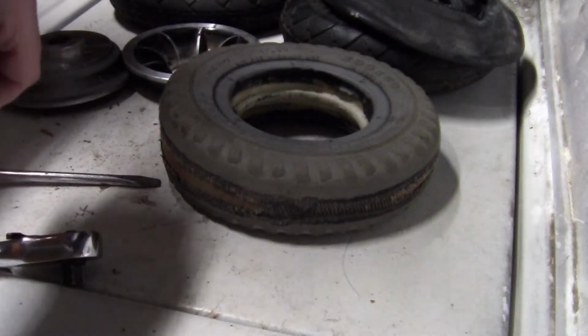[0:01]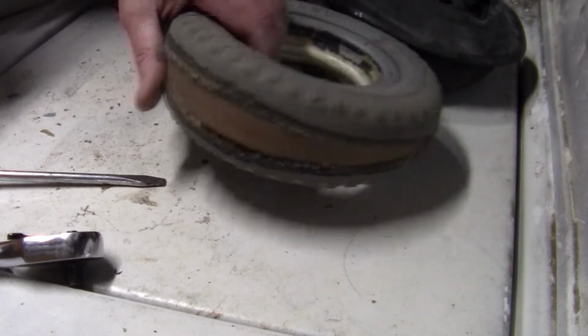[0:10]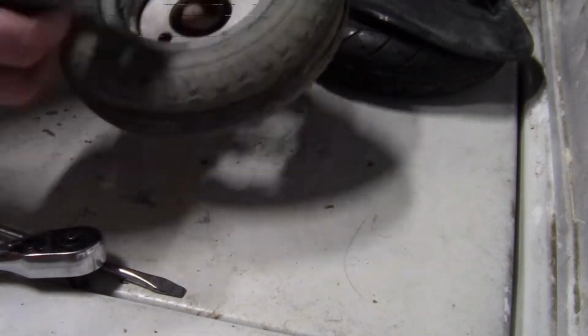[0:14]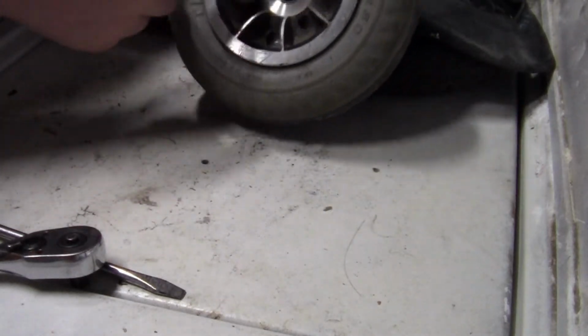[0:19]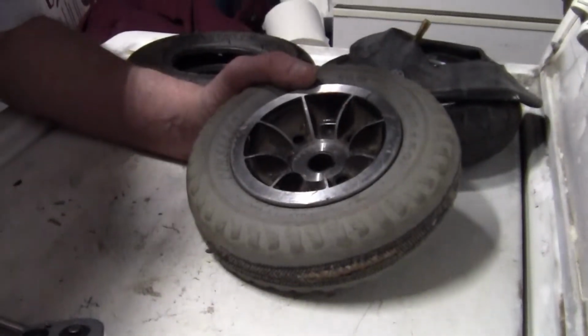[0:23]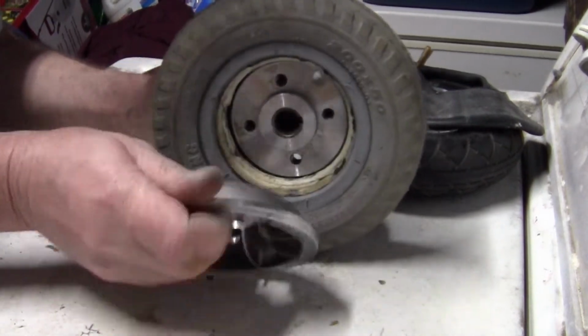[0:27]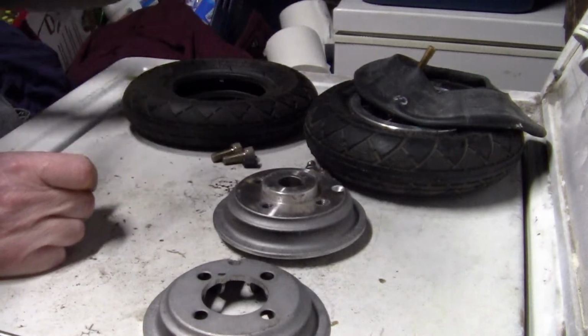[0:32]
Wanted to show you all this, but unfortunately all I did, okay, this is the old tire. It's pretty sketched. That's all I did. So I took the 4 bolts out for the split rim. Let me get you up here maybe. Alright, just took the 4 bolts out and split the rim. That's all I did. Okay? There you go. There's the old tire. You can ditch that. You don't need that no more.
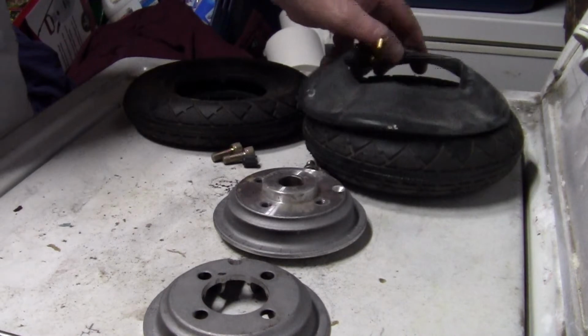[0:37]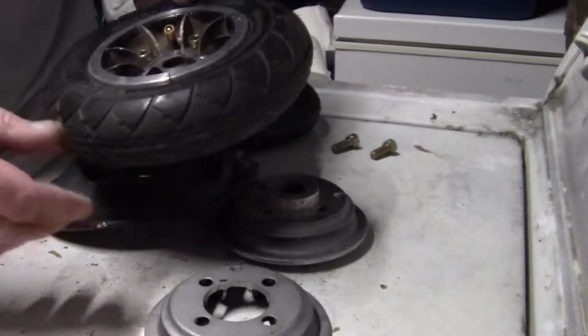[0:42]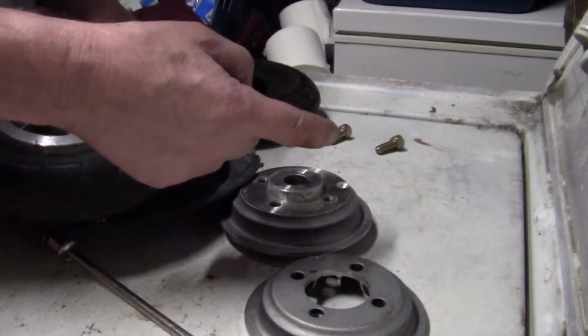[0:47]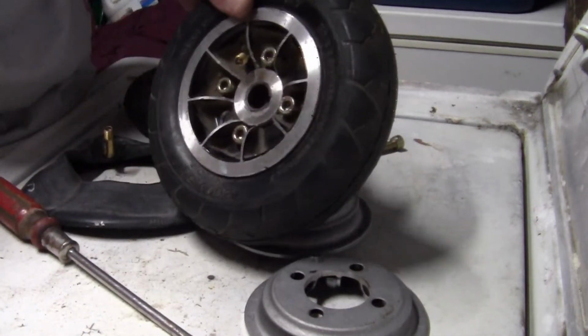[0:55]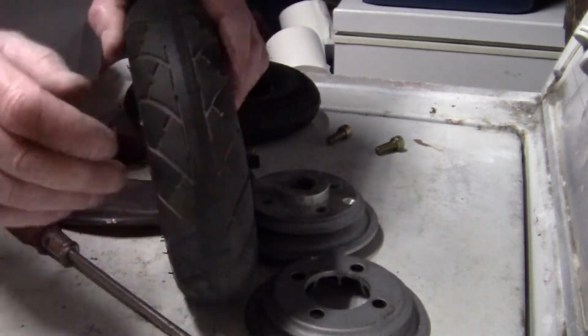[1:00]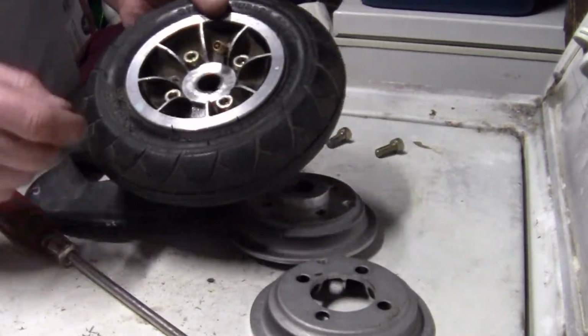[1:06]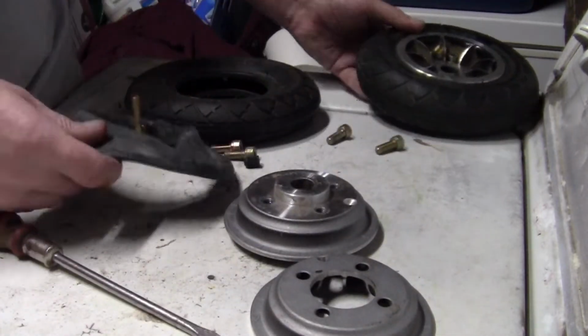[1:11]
Alright. This video is dedicated to doing this. Taking one of these split rims off a mobility scooter that's got a sketchy tire like that, and you go try to find those tires, and they're extremely expensive and there's no need for it. Here's what you can do. The electric and gas scooters, you can buy these tires in different treads and get them on eBay. The tires are like $6 or something, and these are like $3 or $4 the tube. I'll show you how to do it. Stand by.
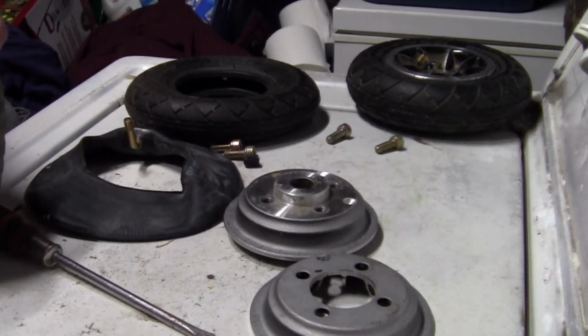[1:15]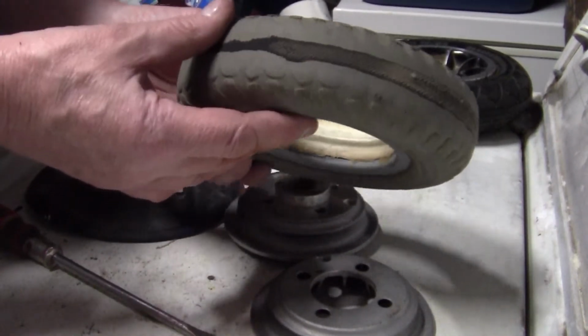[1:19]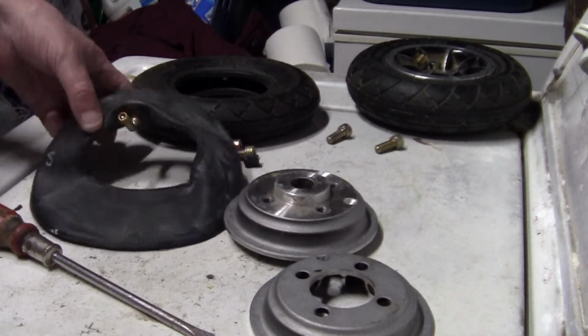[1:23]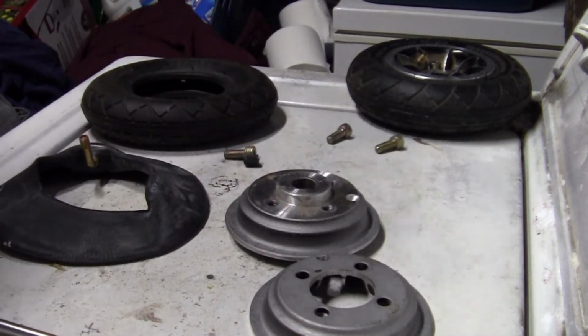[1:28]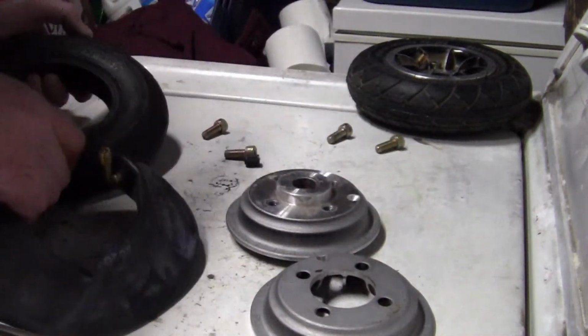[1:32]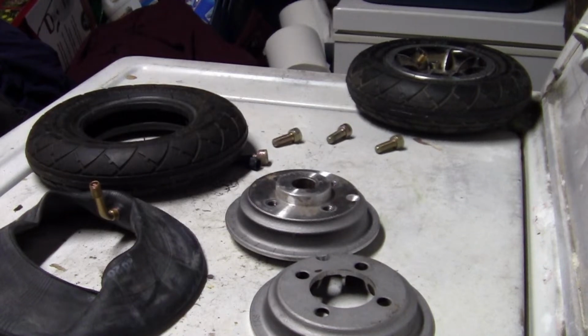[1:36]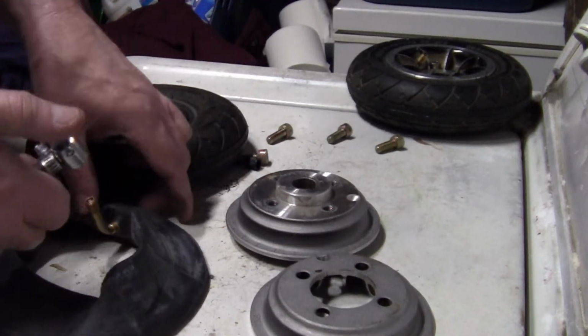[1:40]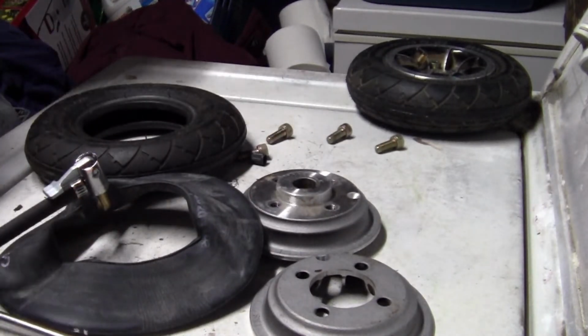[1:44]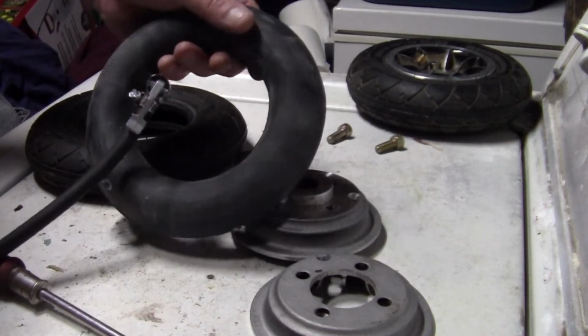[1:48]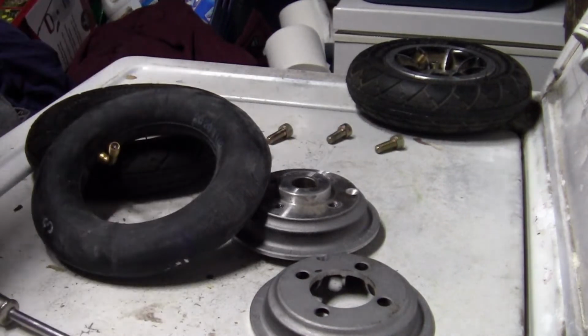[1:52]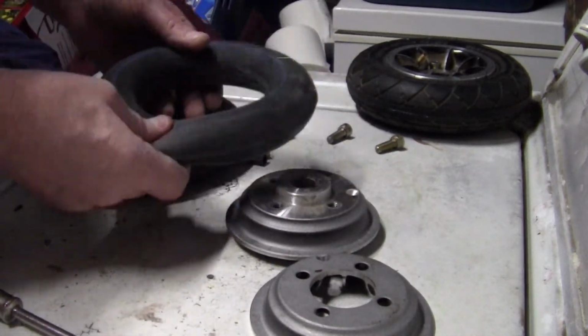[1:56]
Alright, yeah, here's the tire I just changed, and it's sketchy, so don't eat it. Alright, get yourself a tube, get yourself the tire. But you're going to have a hard time getting this tube and this tire in this collapsed state. So you're going to need some way of getting some air in your tire. So, I just have a little portable air tank down here running right now that I fill with my compressor. But you just take a little bit of air and put in that. That's it. Just a tiny, tiny bit. You don't want to blow it way up. It just holds its shape that way. You can still squeeze it.
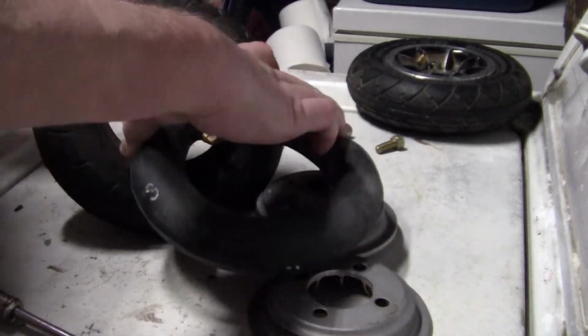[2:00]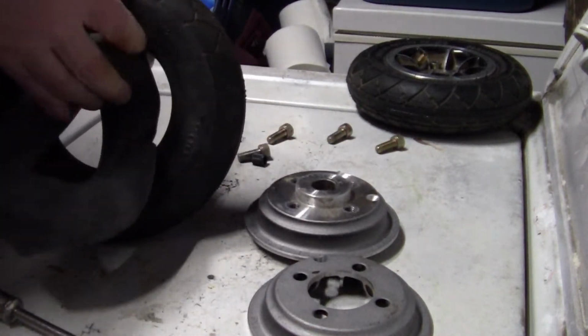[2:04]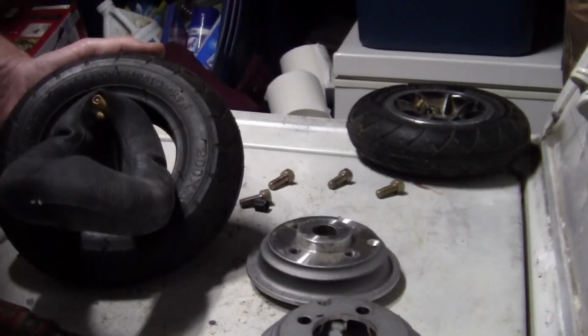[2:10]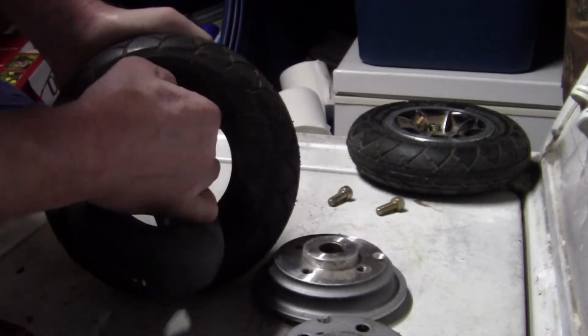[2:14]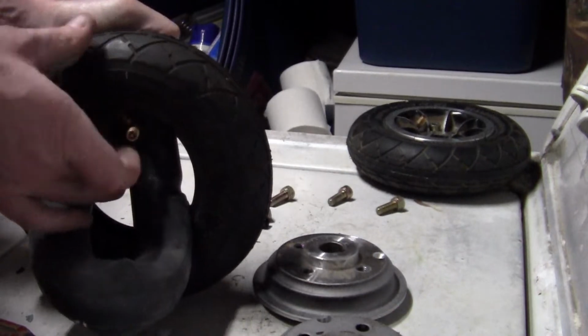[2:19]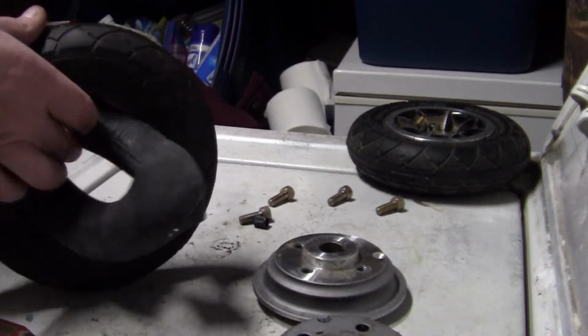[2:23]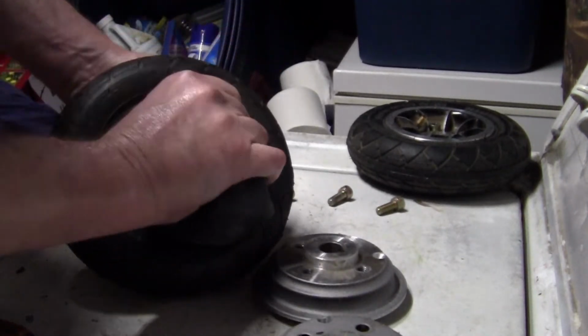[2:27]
Alright. You start by looping your tube like this and spread your tire. Sorry, you can't see a thing. Let me get it up here a bit. Like that. You got to get your tire up in the tube to start it. Push it all the way up to the top. Sort of like a bicycle tire, only way smaller. And you just keep feeding it around till you get your tube all the way in there.
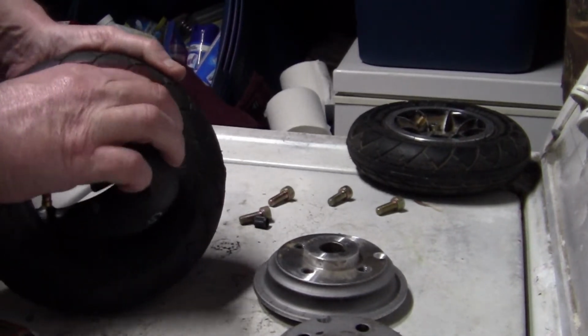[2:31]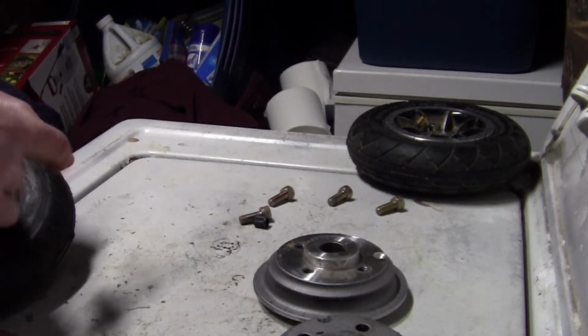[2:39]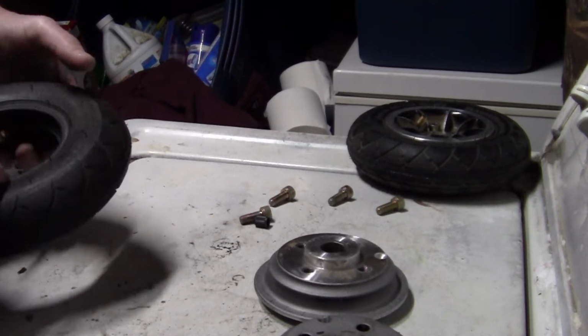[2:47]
Ouch. Still recovering from the junk. Had that COVID all too many times now. 3 is enough. Pray to Lord that I won't get it again.
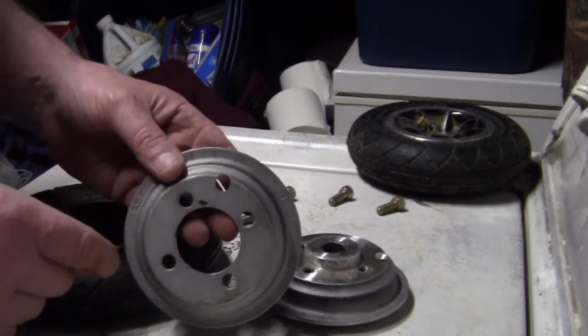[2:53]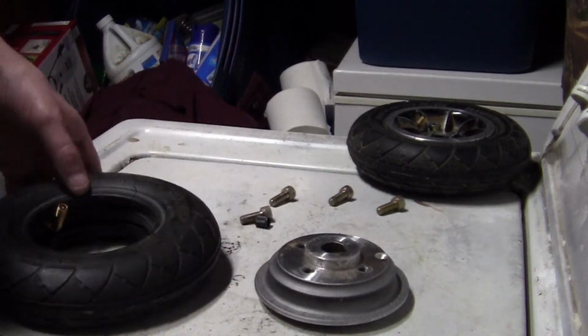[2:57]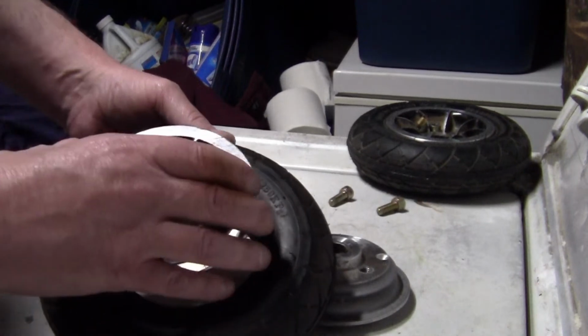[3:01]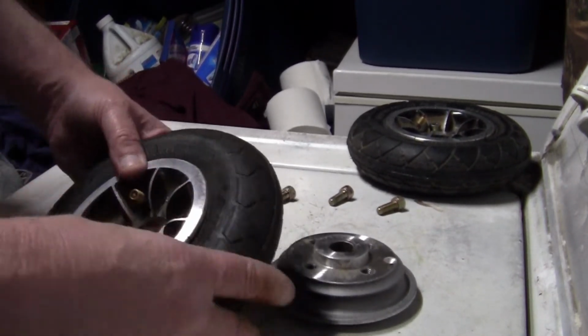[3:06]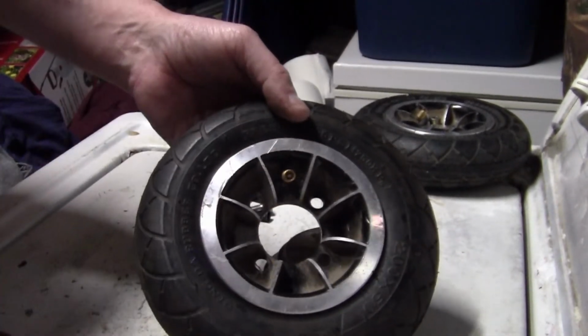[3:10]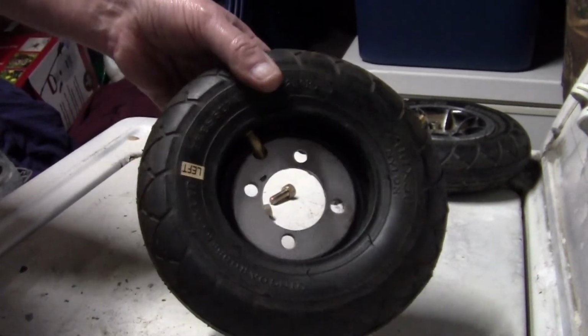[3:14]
Alright, now in this particular case, to make a place for the valve stem, I had to drill a little hole. That may not be your case on yours. You have to check it out. But always get the one with the brass valve stem. Don't get a tube that doesn't have a metal valve stem. You'll wish you hadn't. There. See how it feeds it up right through that hole? Alright. And there's the back side.
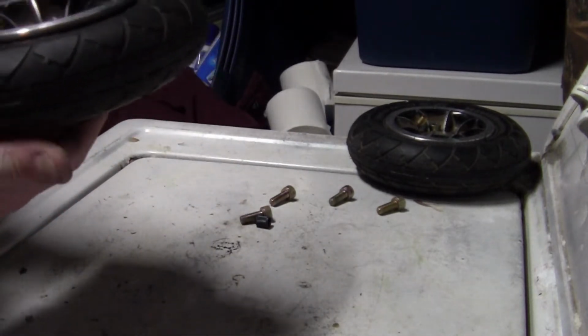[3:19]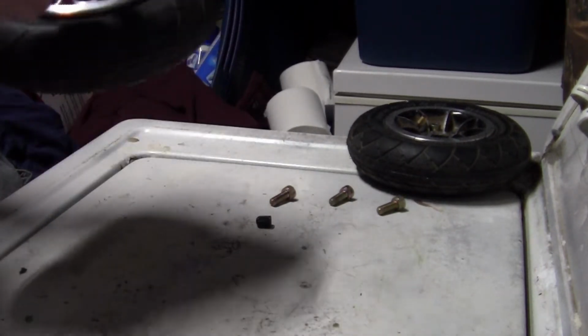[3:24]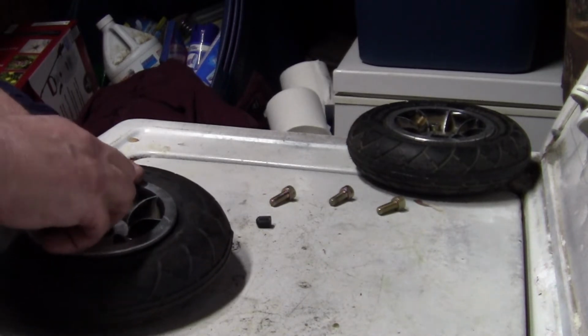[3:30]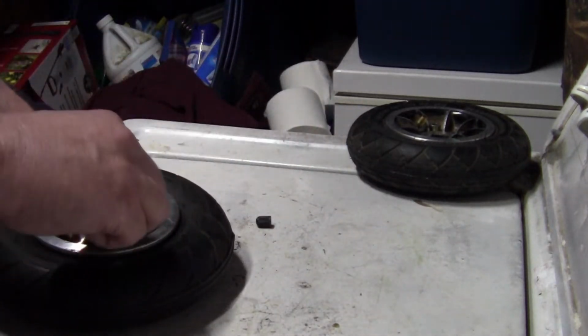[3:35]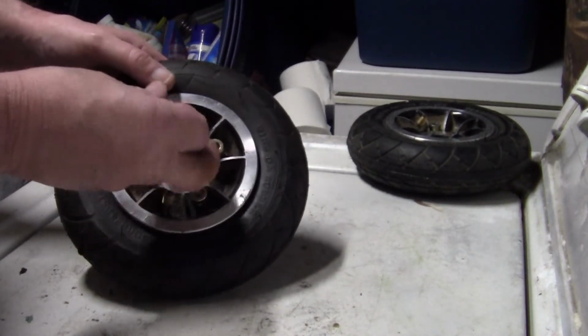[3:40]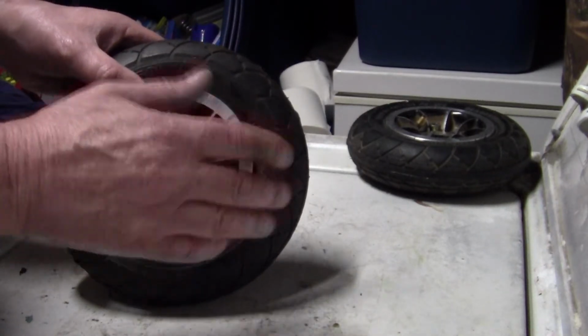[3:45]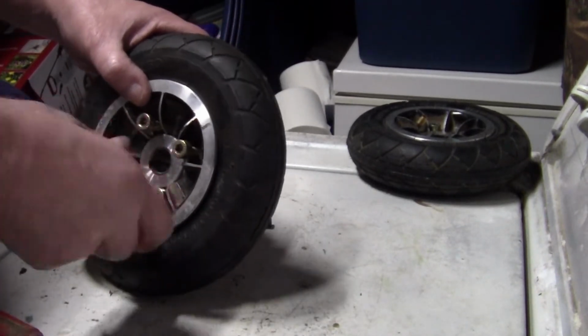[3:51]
Then you take your other half, and you got to line that up now with your bolt holes. And you put your bolts back in. Don't tighten any one bolt. Use a crisscross pattern. Whether you have 4 or 6 or however many. Just put your bolts back in. Because what it's doing is clamping them 2 halves of the wheels together, and you don't want to get one of them cockeyed. You just feed these bolts in.
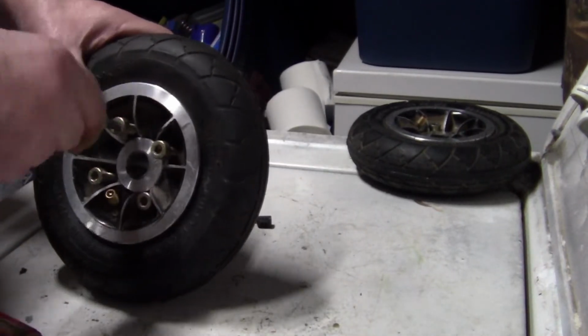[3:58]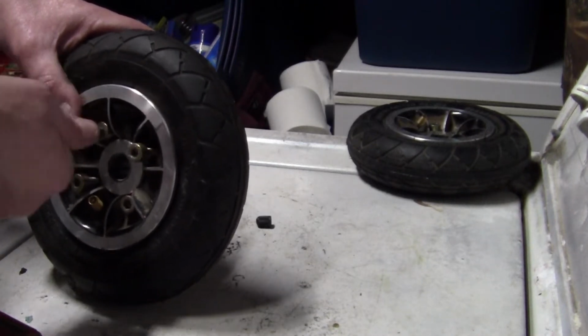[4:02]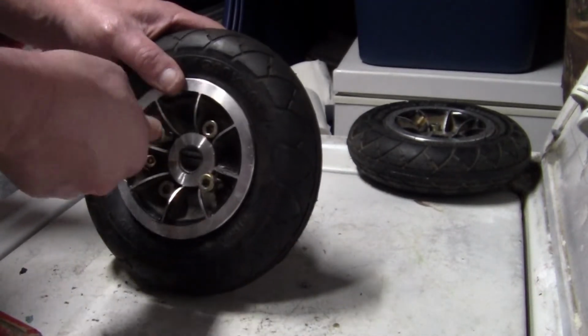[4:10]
I always take the extension in my hand and do this part. You could run them in with an electric or something, but you got to be careful not to tighten one more than the other. Just run them in by hand, and then you kind of know. And then the same thing when you run your ratchet.
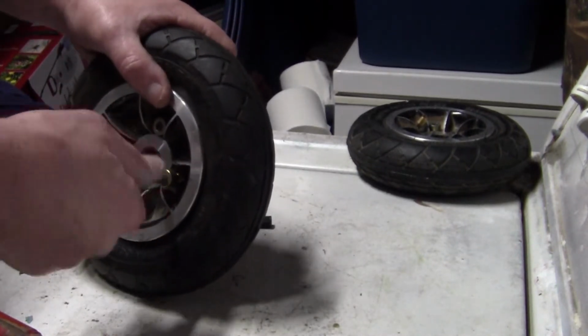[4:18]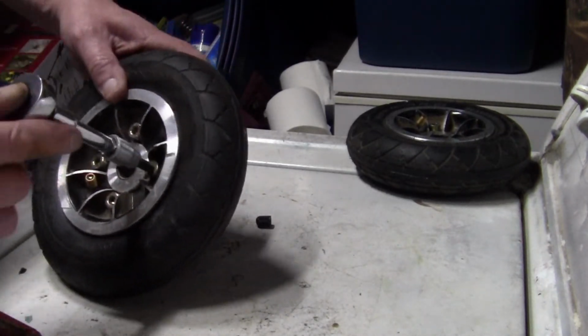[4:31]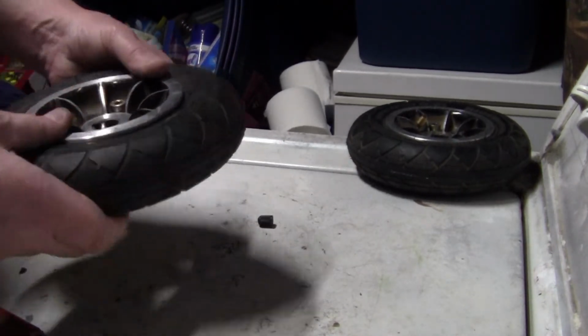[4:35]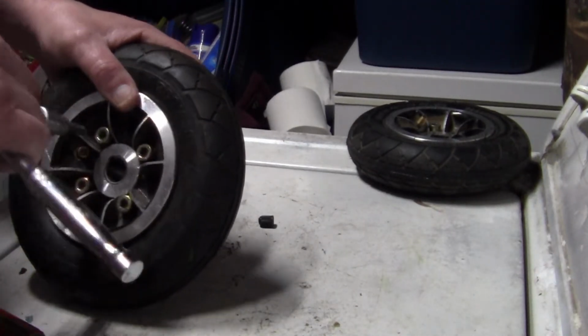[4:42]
You want to. I started to get the electric one, but I couldn't find the 3/8 to 1/4 inch adapter, so the wife's picking one up at work. She works at Tractor Supply as a manager. She's gonna bring me one, and then we can do this type of thing a little easier. That's okay, we can run hand tools, I don't mind. Okay.
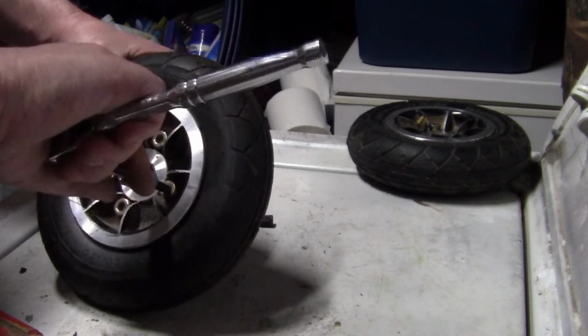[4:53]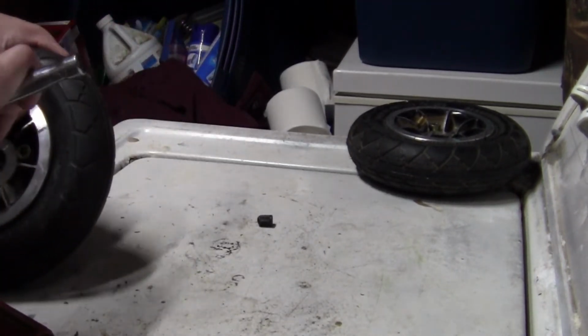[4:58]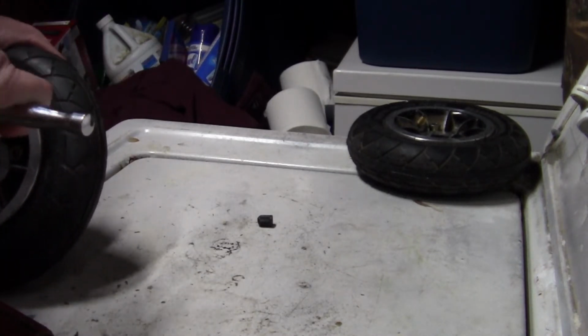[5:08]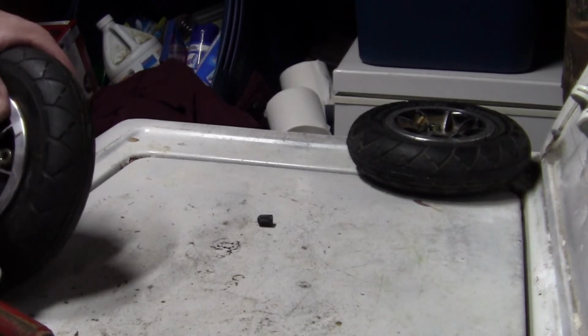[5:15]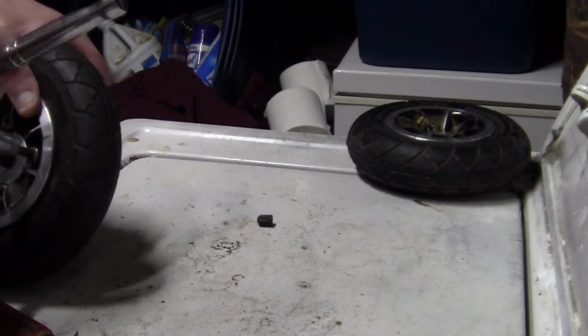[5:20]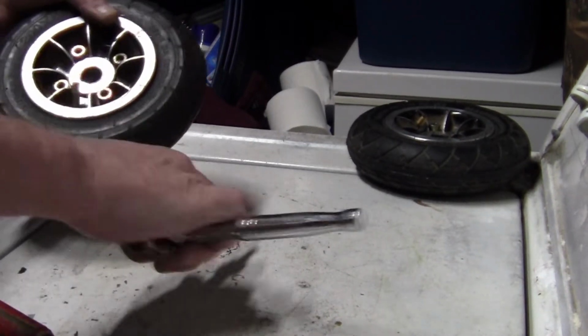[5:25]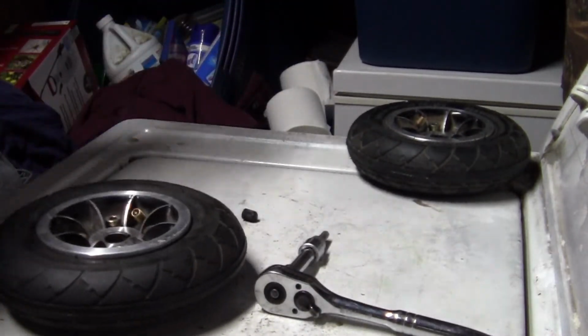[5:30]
Let's get these tight. I had one of these shed a few bolts. Didn't fall apart, but I could feel it getting a little wobbly, so I stopped, came on home. Alright, and there you go. Now all you gotta do is air it up. We'll do that right now.
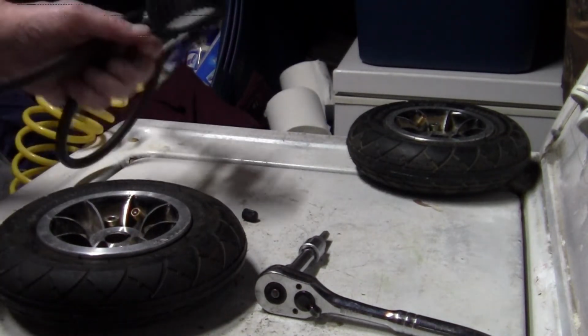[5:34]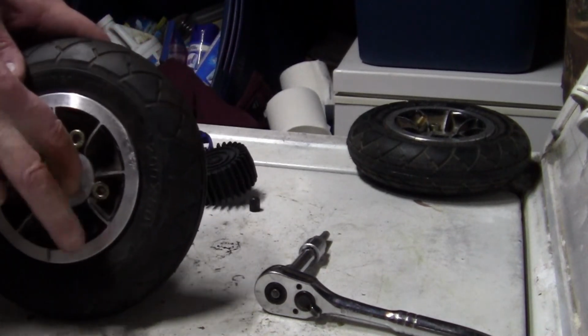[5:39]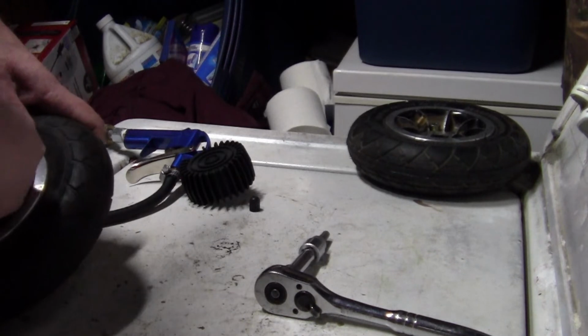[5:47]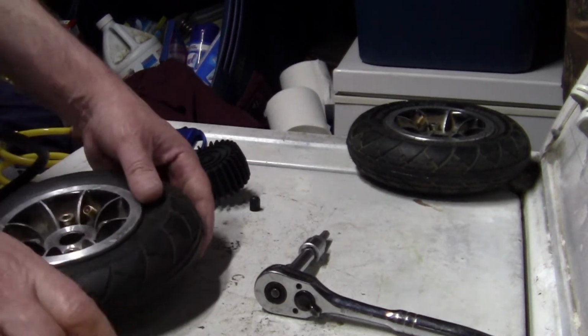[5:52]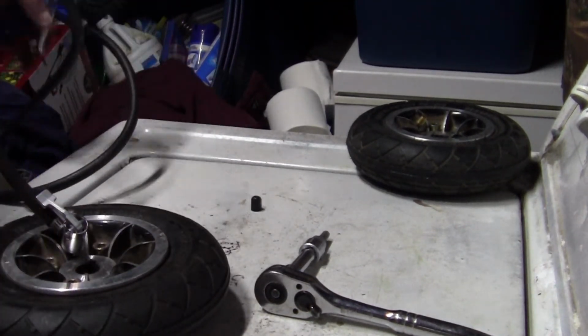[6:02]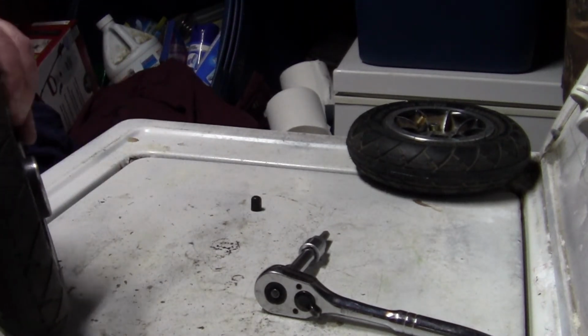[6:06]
And it's not like you're gonna be running your mobility scooter out in the brush, okay? So it's perfectly fine to put air up tires on it. And you'll save hundreds of dollars, literally. Shoot, missed that one. Get over there. There we go. Now we can air it up. Air it up slow because these don't hold much air.
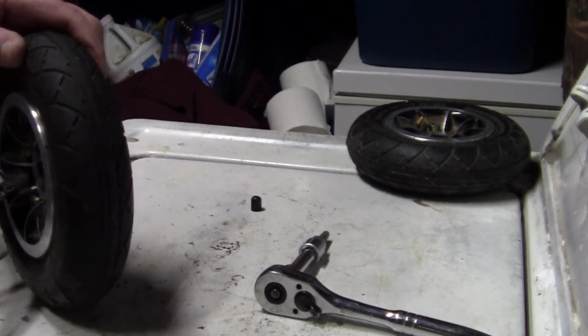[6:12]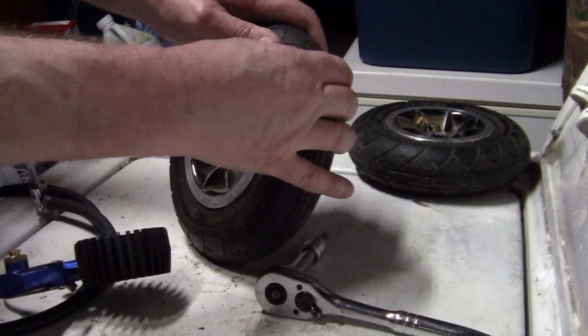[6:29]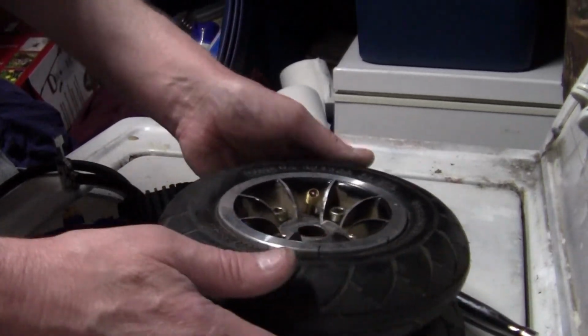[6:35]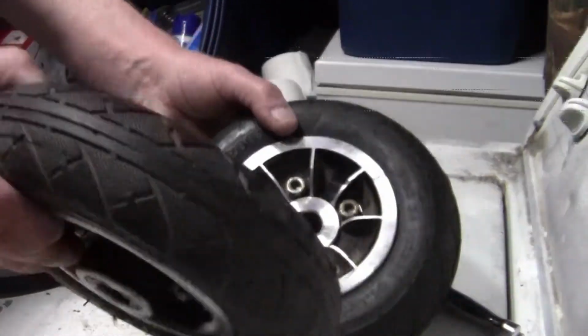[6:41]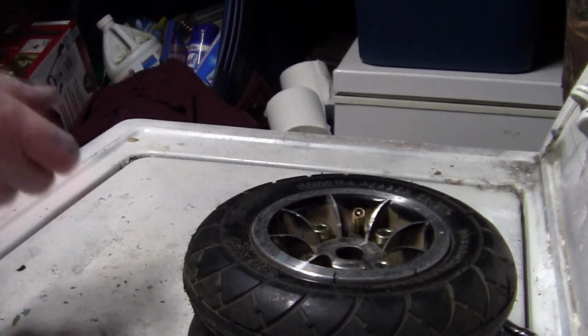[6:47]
There. It's about right. It says air it up to 36 pounds. Well, at 22 pounds, it's hard as a rock. It is so hard I can't squeeze it. So, that's how you put one together, though. There's the back tires for that scooter, and we saved hundreds of dollars doing it this way, because those gel filled or whatever they call them, expensive. All right, tubes, that's all you need to swap your tires right on over to the air up tires.